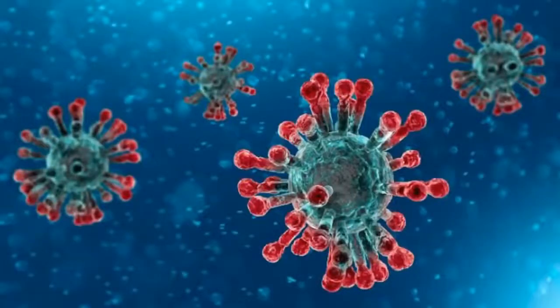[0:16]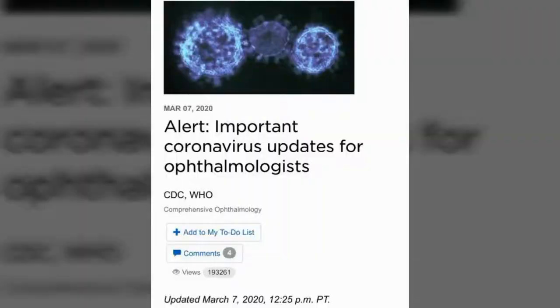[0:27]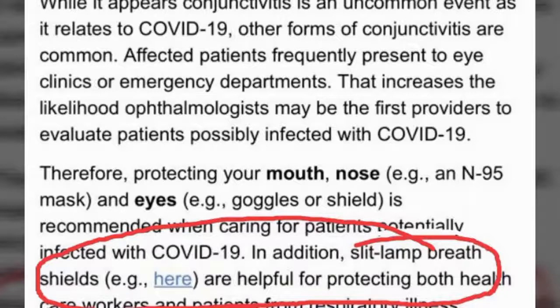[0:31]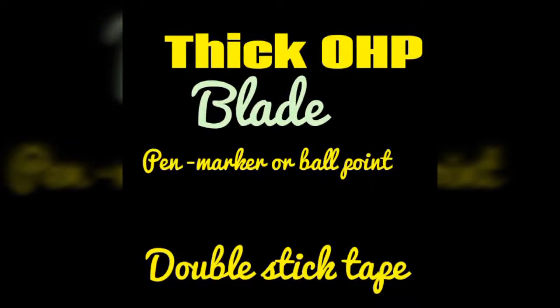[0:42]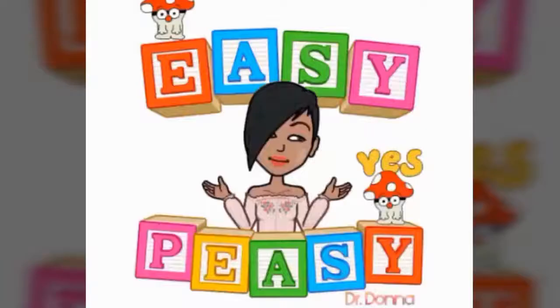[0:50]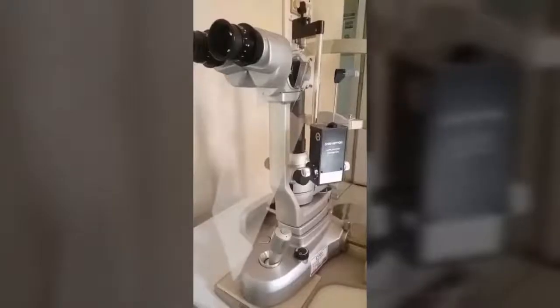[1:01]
All you need to make a corona shield are an OHP sheet, the thickest one you can get, a blade, scissor, pen and double sticking tape. Just cut a window in the OHP and fix it onto the slit lamp. So easy, right? Yes, it could be, but beware of a little design hitch we should take care of.
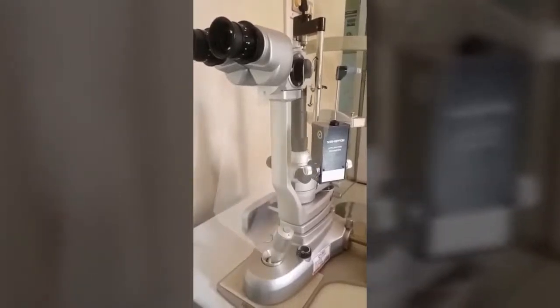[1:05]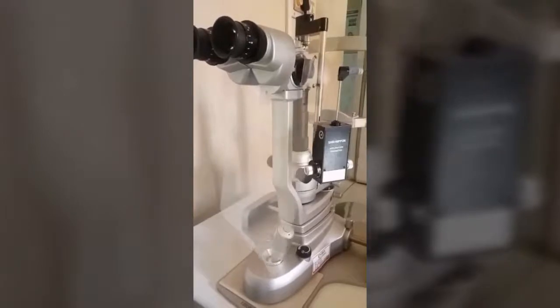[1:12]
If we make a random sized large window like this in the OHP sheet, it may not fit well at all, flutter too much and be less effective as a barrier. This means that to make an effective corona shield, the cutout in the OHP must be small, just large enough to allow the sheet to slip past the widest anterior part of the slit lamp binoculars.
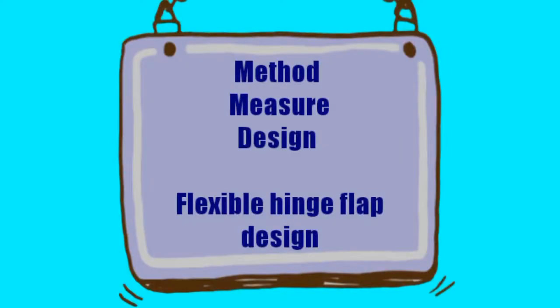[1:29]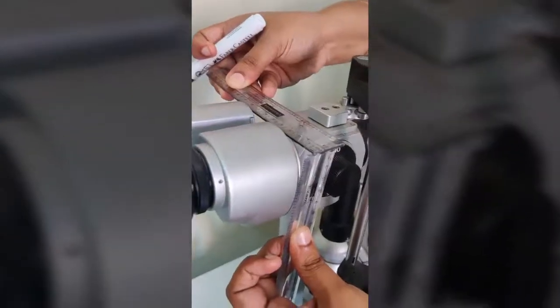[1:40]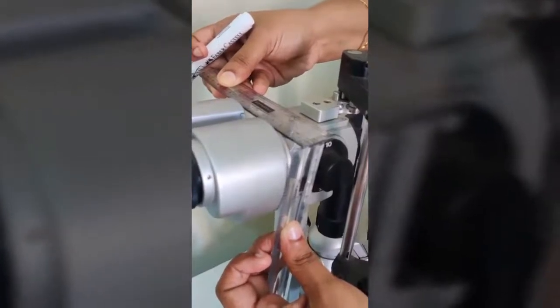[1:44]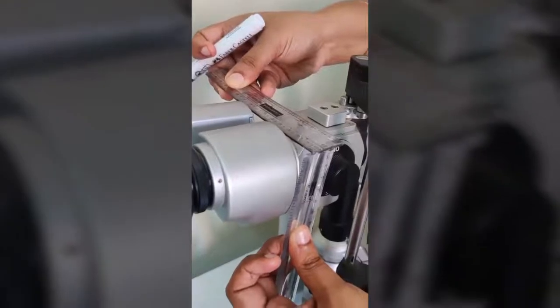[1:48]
To achieve this, we must have some method, measure and design. What we present here is a flexible hinge flap design. Now let's go step by step. The only measurement we need is the length and the breadth of the slit lamp binoculars. It is 12 by 6 cm in Haag-Streit, Zeiss and Takagi models.
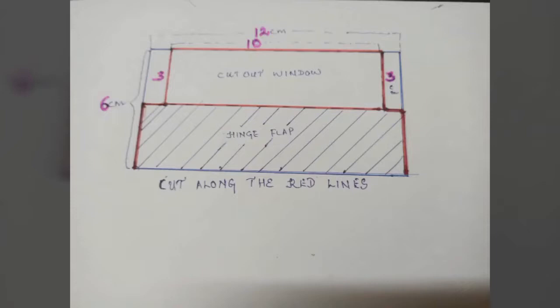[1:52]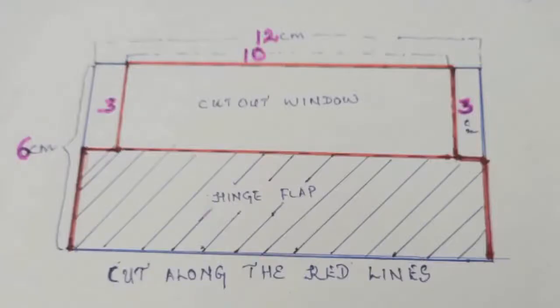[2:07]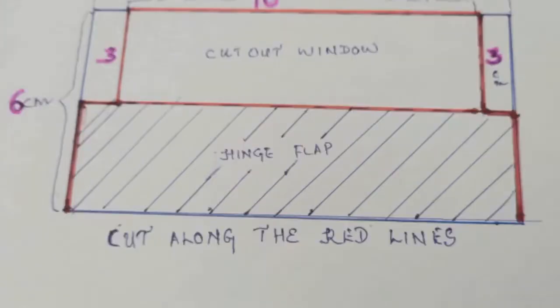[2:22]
For purpose of clarity, let me detail the plan first on a piece of white paper. Draw a rectangle of 12 by 6 cm on the upper one-third of an OHP sheet. Cut out a small box of 10 by 3 cm from the top half of this box. Now make small side cuts from either side of the lower border of this small window and draw the blade down to create a hinge flap from the lower half of the big box. You can follow the line in red to make this sort of a design.
Now, let us watch how this plan is put into action. Especially note the making of the cutout and the flap.
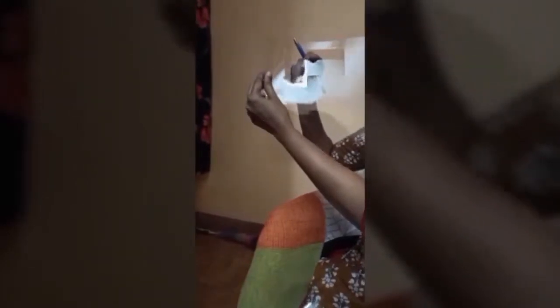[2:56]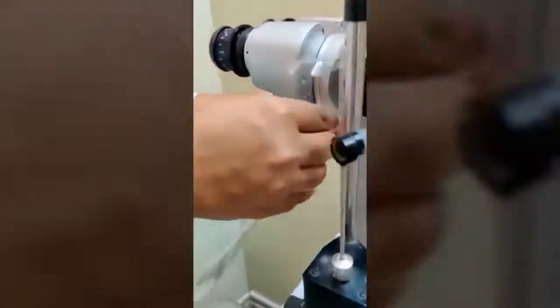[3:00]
Finally, this is how the corona shield looks. See how nicely this flap bends to allow the small size cutout to freely negotiate the much wider binoculars. Once in the correct position, the flap also snaps back, ensuring a perfect gap-free fit.
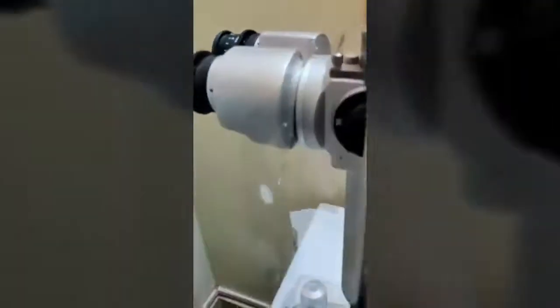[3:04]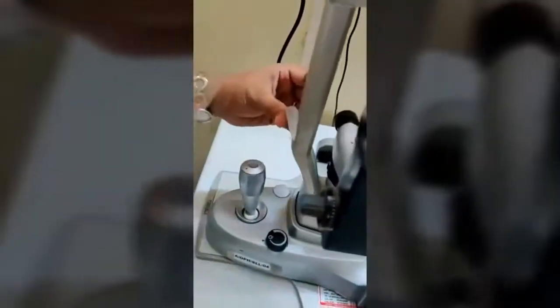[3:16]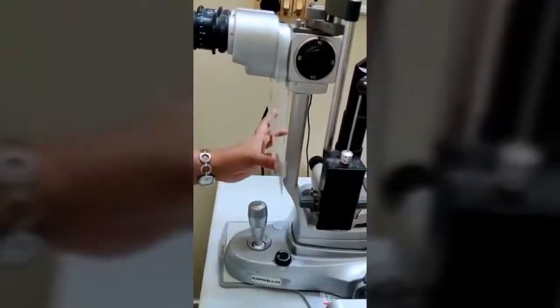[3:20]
The shield can be made further flutter-free by sticking it onto the slit lamp with a small bit of translucent double sticker tape. Also, the sharp corners of the OHP sheet may be rounded off with the scissors. Wow, our corona shield is fine and ready to use. Now go make yourself one today.